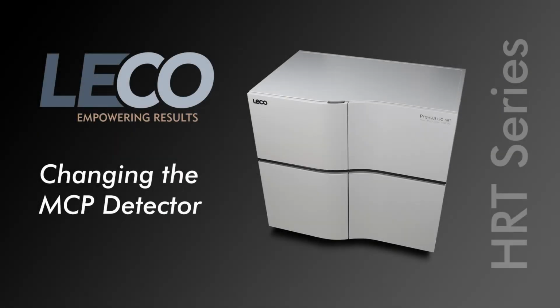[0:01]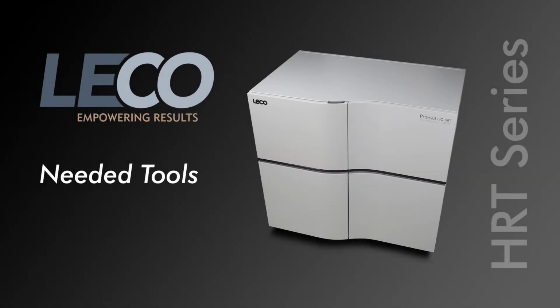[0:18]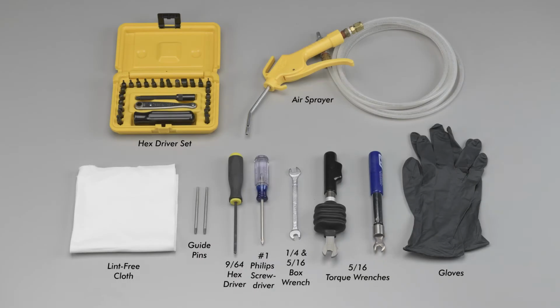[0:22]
Welcome to LECO Corporation's instructional video for changing the three-stage detector on the Pegasus HRT Plus system. This video will walk you through the proper method of venting the system and through the process of replacing the three-stage detector. Some or all of these tools may be needed to replace the detector.
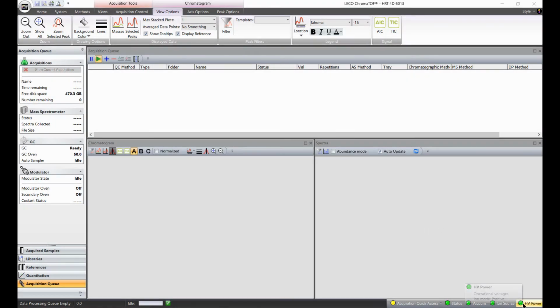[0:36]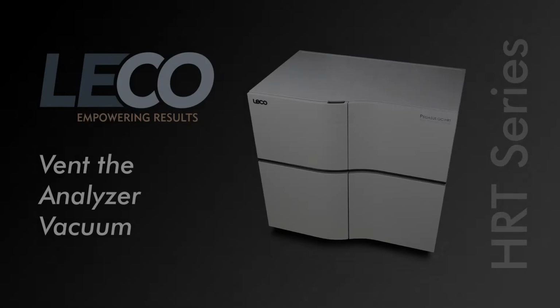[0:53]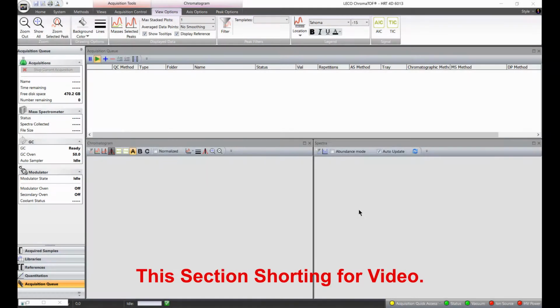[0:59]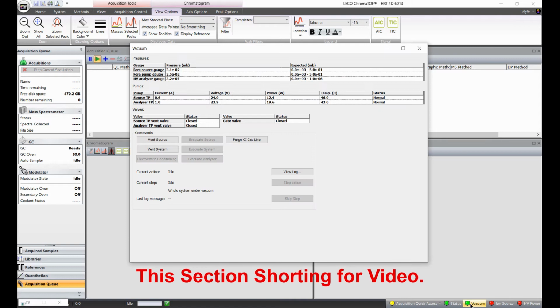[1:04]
Power down the high voltage by clicking on the HV power button in the lower right corner of the ChromaTOF software. Completely vent the analyzer through the vacuum page of diagnostics. This process will take a few minutes.
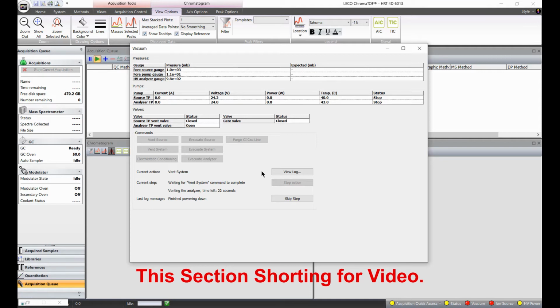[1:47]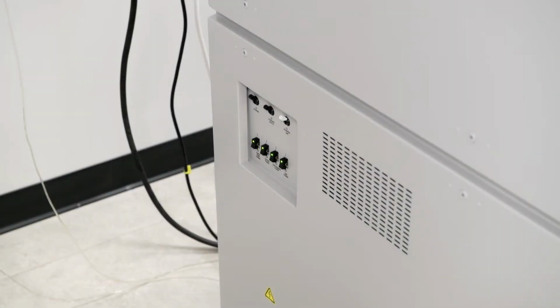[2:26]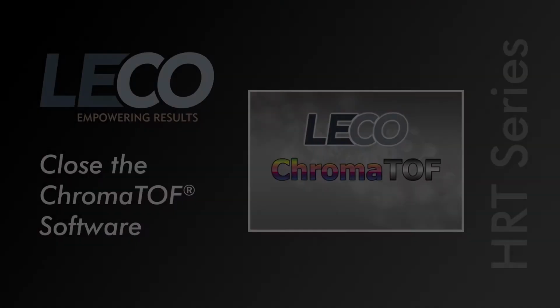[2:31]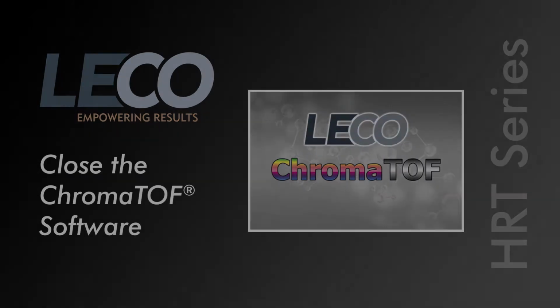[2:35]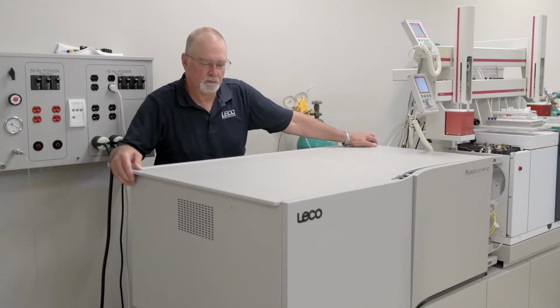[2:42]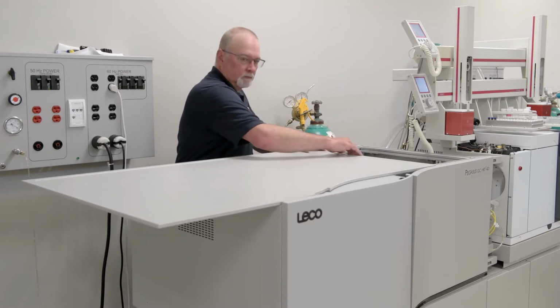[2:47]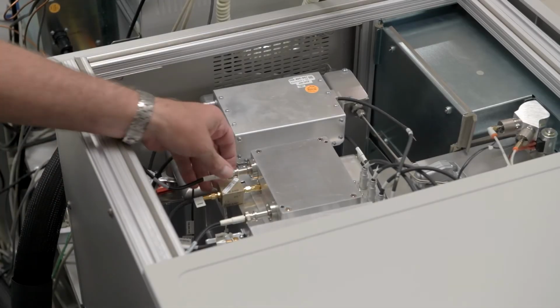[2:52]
Power off the electronics power by flipping the breaker switch on the side of the HRT. Close the ChromaTOF software. Slide the top lid back on the HRT to expose the top of the analyzer and the detector flange. Remove the detector bias, detector in, and the detector out cables from the back side of the detector flange.
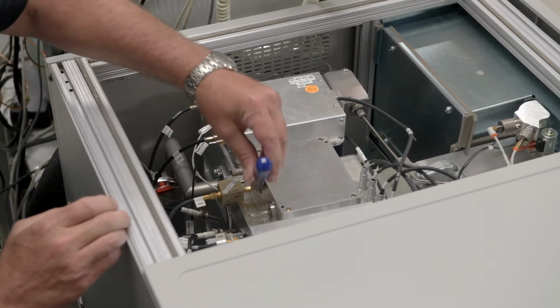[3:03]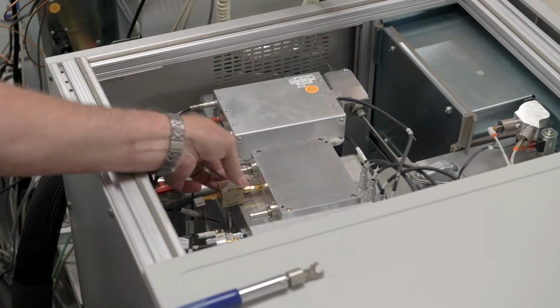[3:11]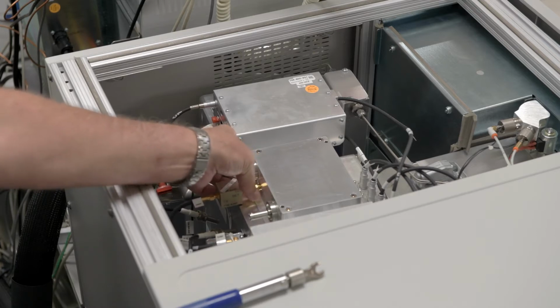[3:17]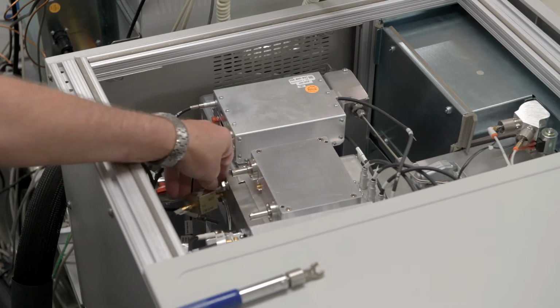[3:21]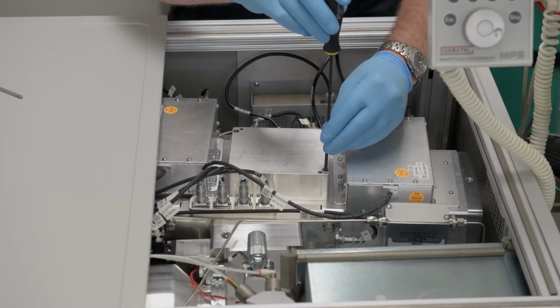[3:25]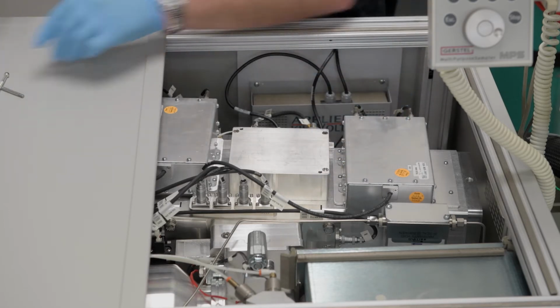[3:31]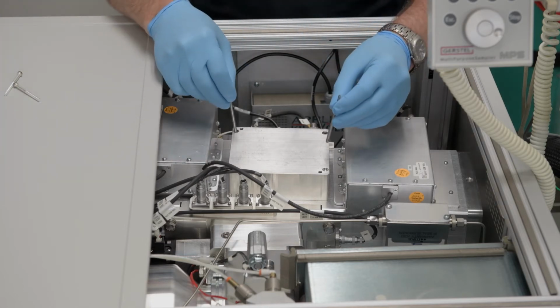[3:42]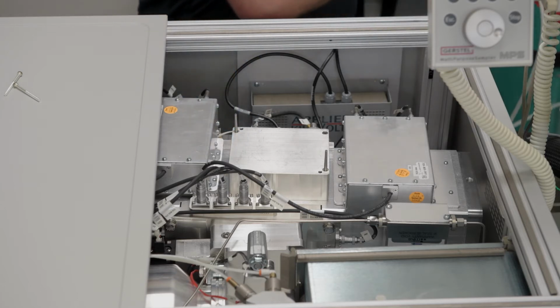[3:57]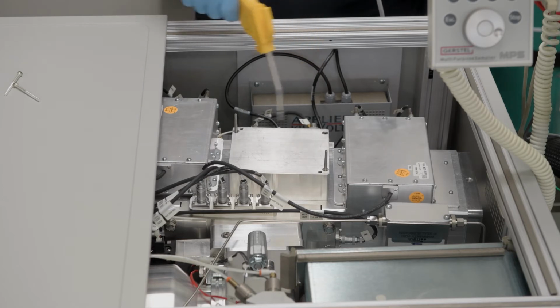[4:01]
Remove 2 of the 4 screws opposite each other from the detector flange and install guide pins to allow the flange to be lifted straight up and away from the analyzer. Use compressed air or canned air to blow away any dust from around the detector flange. This is to help prevent small particles from falling inside the analyzer when we lift the detector flange away from the analyzer.
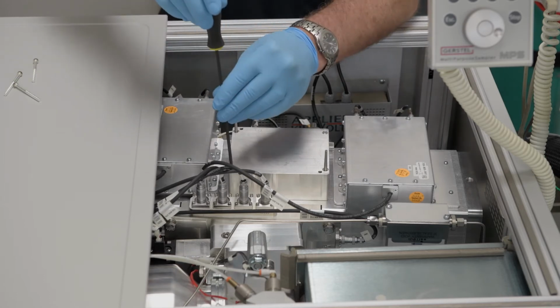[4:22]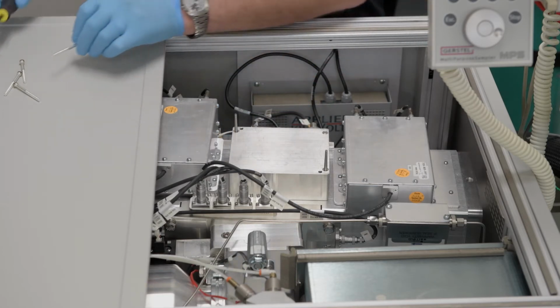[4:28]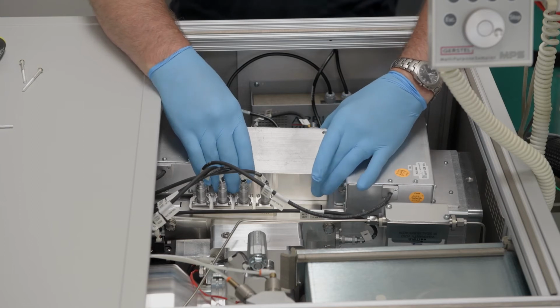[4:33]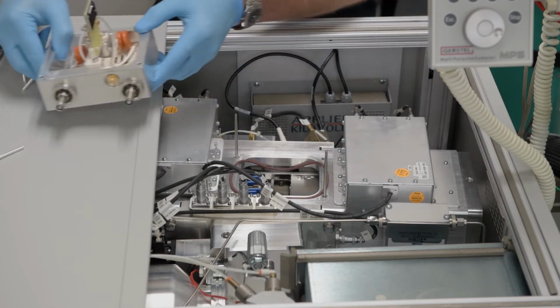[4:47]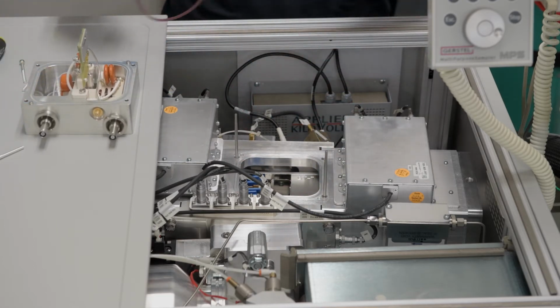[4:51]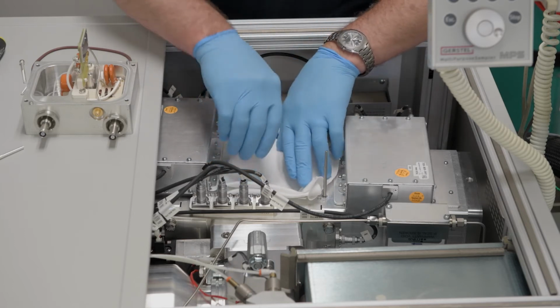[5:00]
Unscrew the 2 remaining hex screws and then remove the detector flange by lifting straight up using the guide pins and set the detector flange off to the side. Use a lint-free cloth to cover the opening to prevent dust or hair from settling inside the analyzer. You may also use a piece of folded paper or a blank flange to cover the opening.
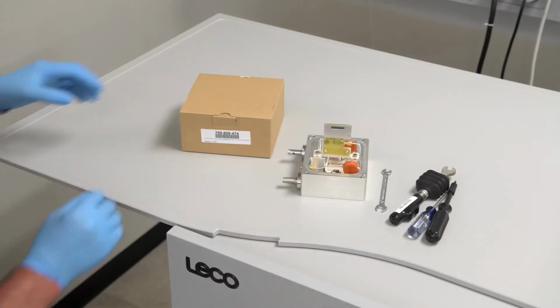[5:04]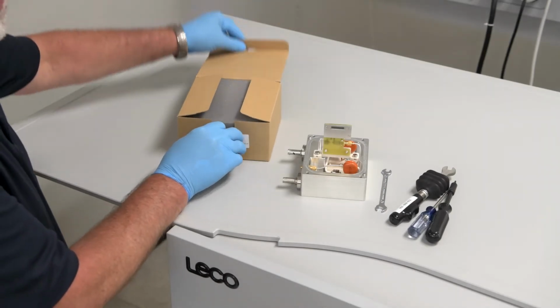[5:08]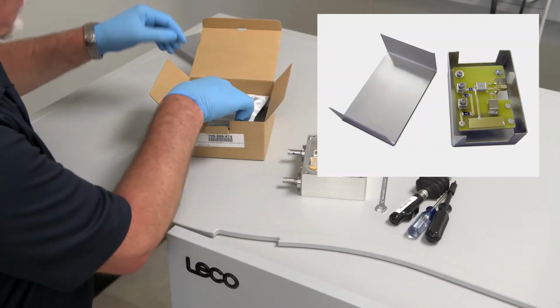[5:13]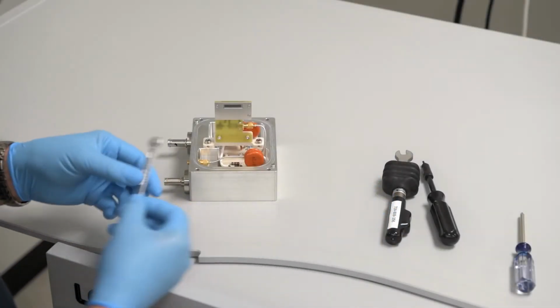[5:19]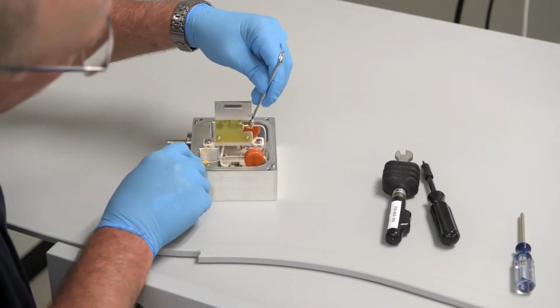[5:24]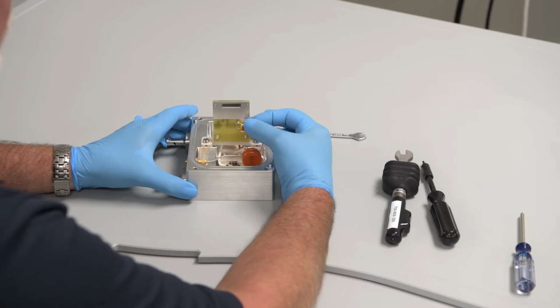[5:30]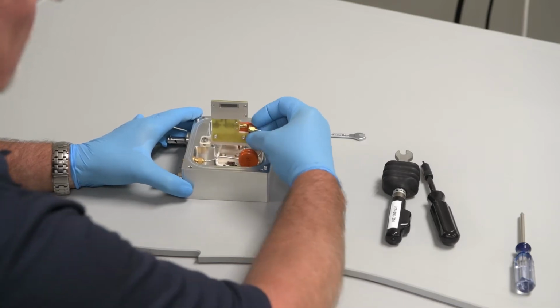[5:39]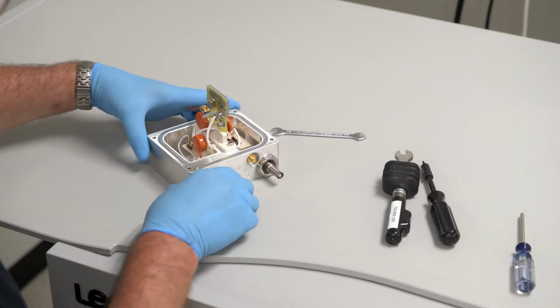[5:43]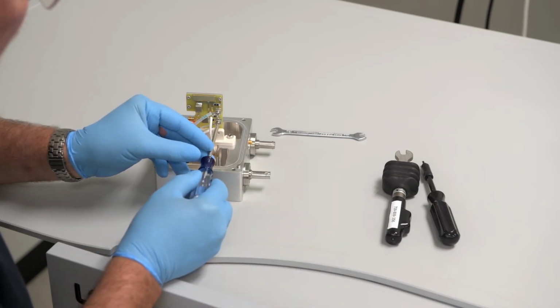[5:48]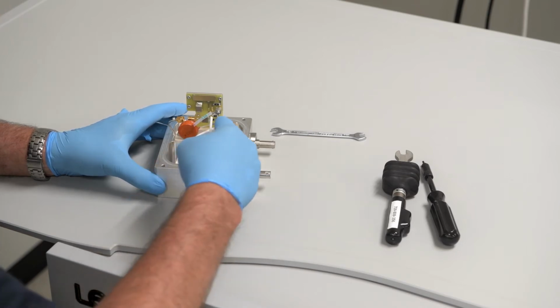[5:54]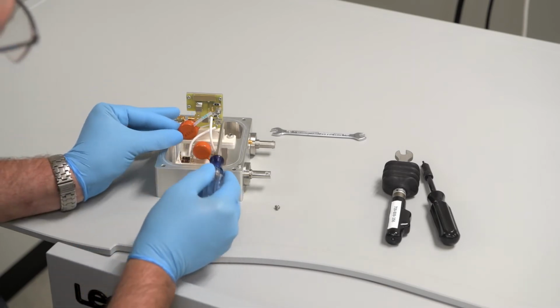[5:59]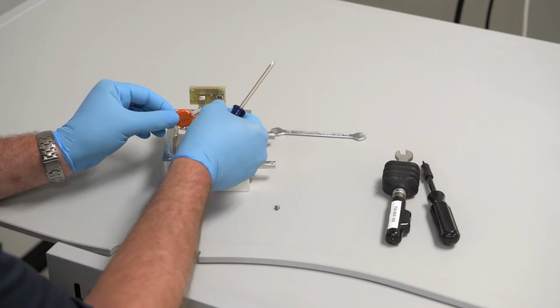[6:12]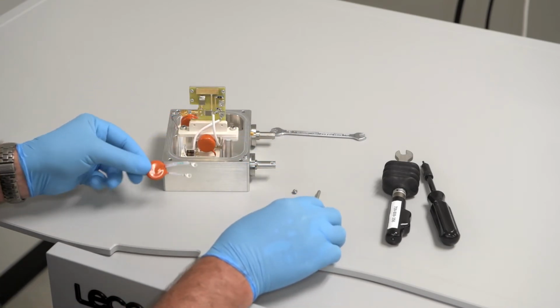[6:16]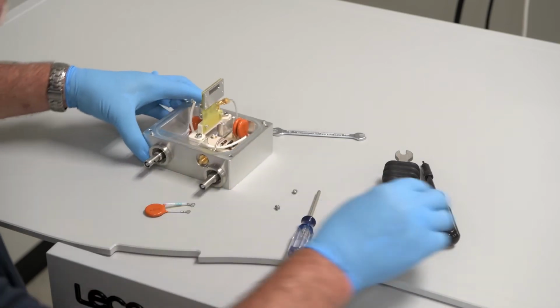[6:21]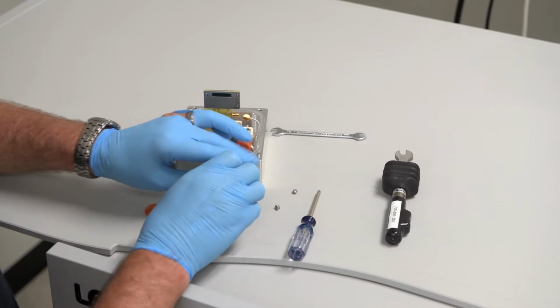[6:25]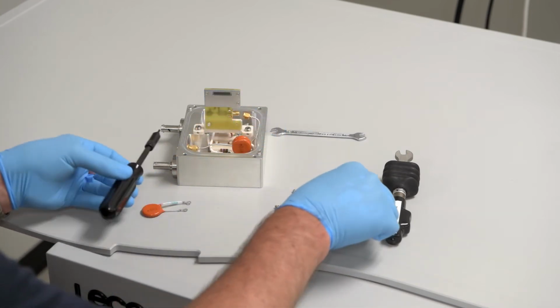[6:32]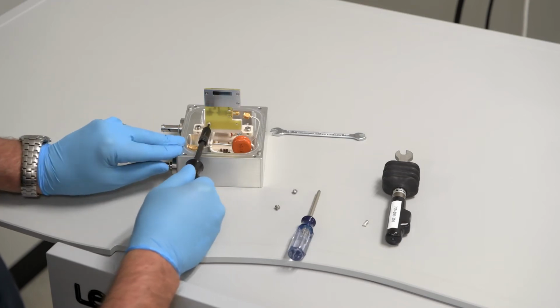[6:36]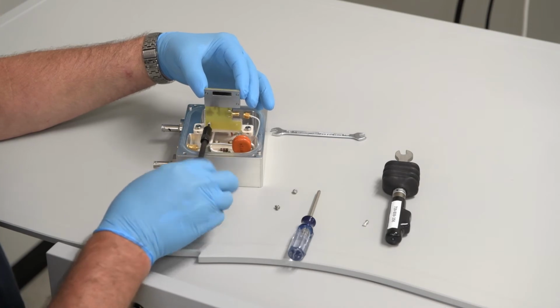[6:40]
Remove the new detector from its sealed packaging. Confirm that the serial number on the actual detector matches what's on the box. Wear protective gloves. Remove the old detector from the flange. Always hold the detector by the edges.
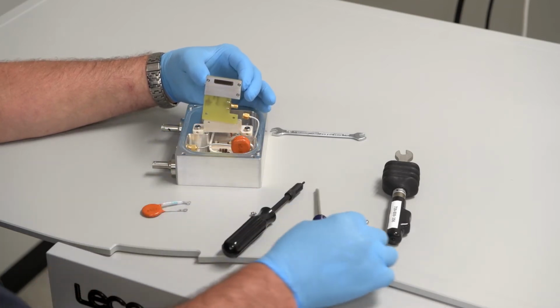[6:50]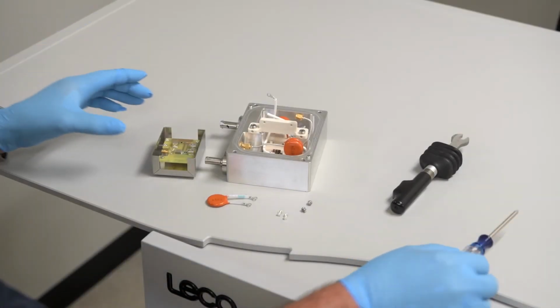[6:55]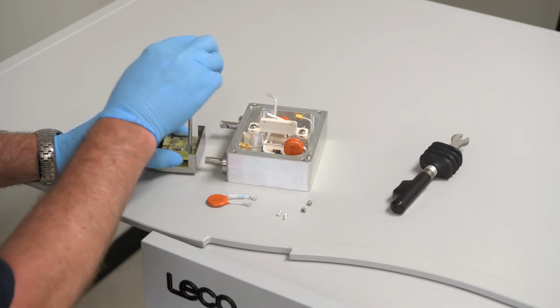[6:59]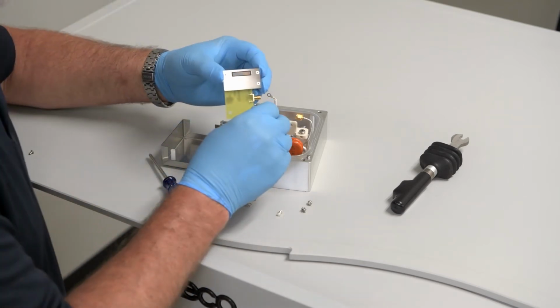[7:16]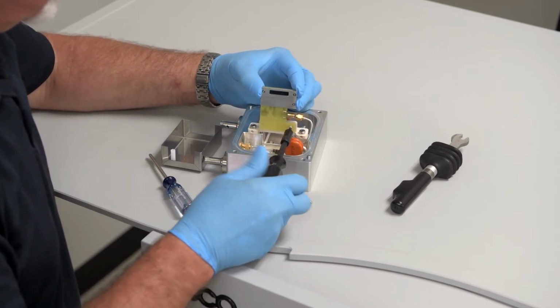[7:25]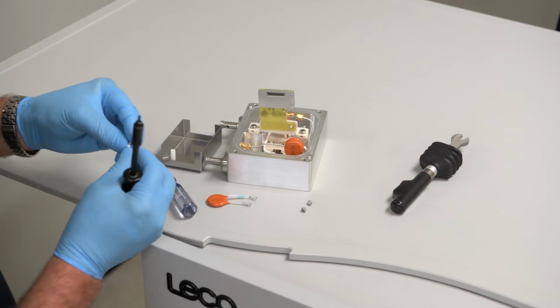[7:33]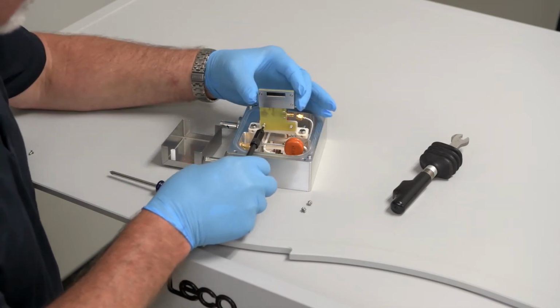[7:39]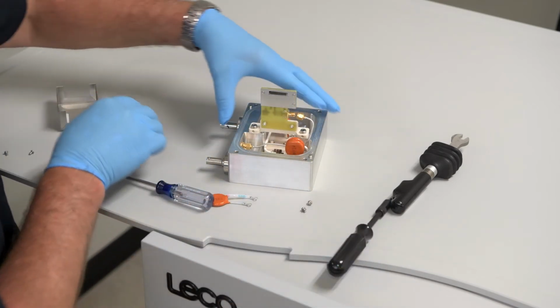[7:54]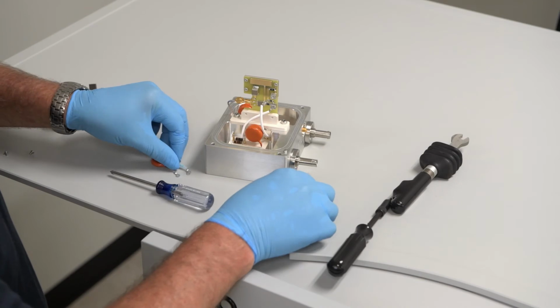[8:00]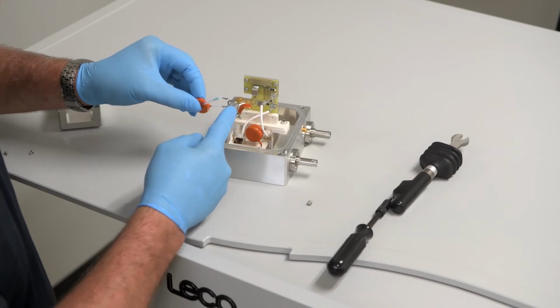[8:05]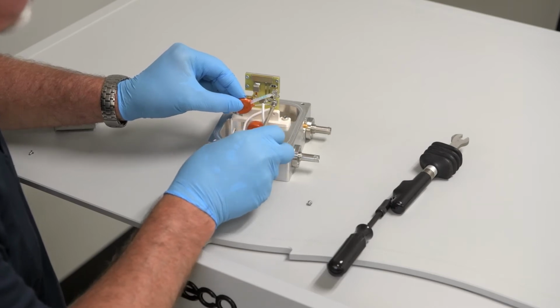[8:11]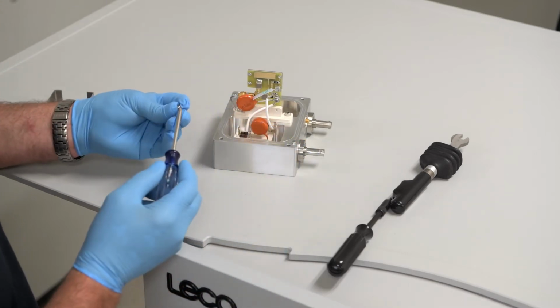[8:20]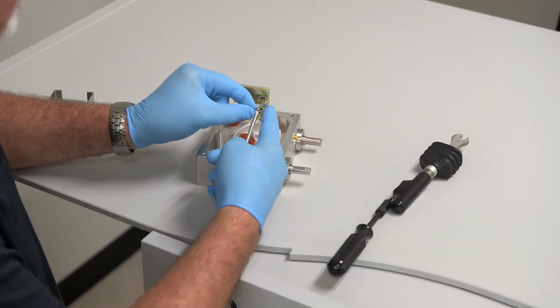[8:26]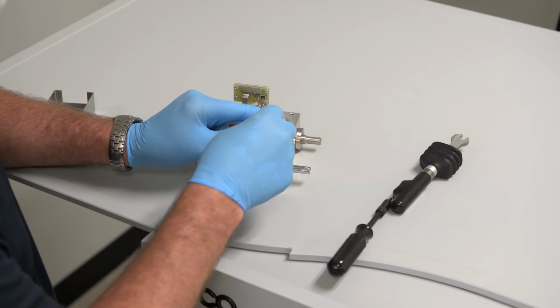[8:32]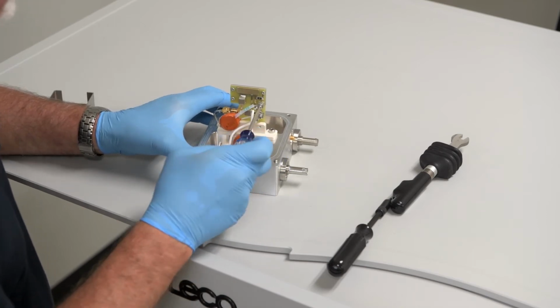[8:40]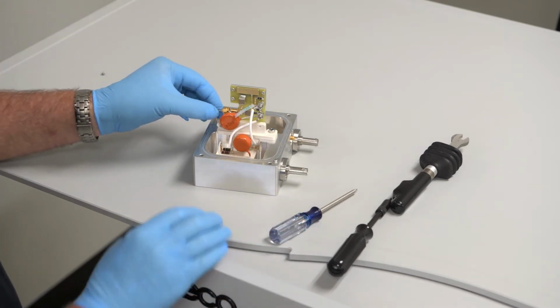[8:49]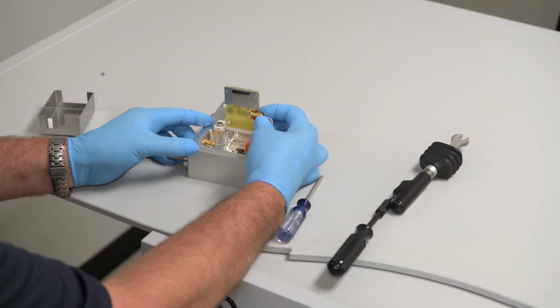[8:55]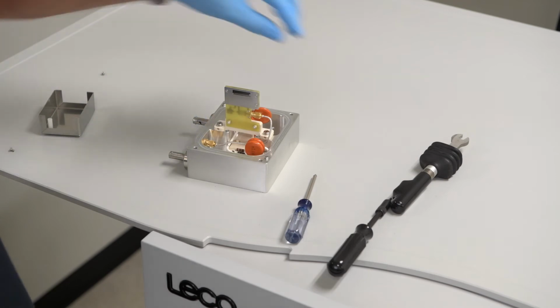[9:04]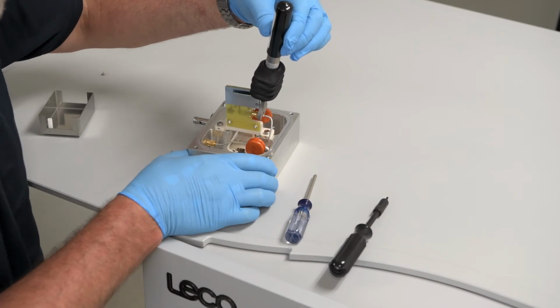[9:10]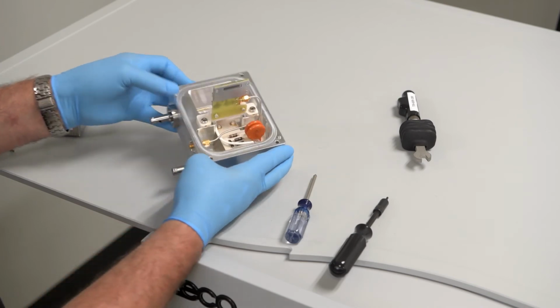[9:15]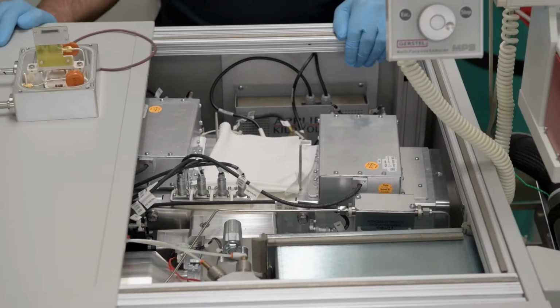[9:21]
Install the new detector. Be extremely careful not to touch the face of the detector. Use the 4 inch-pounds torque wrench to snug the 5/16 SMA connector. Inspect the detector. Make sure all of the connections are secure. Clean the detector flange O-ring. Make sure it's seated in the flange groove.
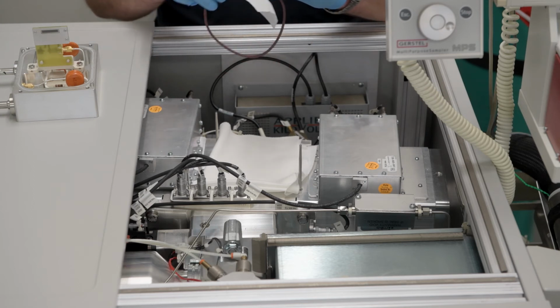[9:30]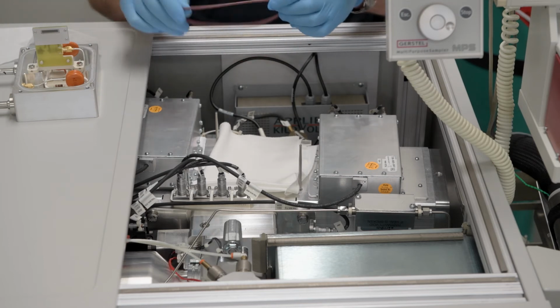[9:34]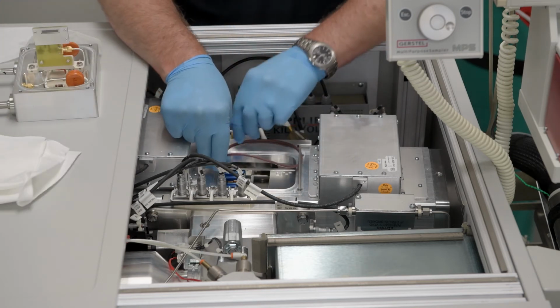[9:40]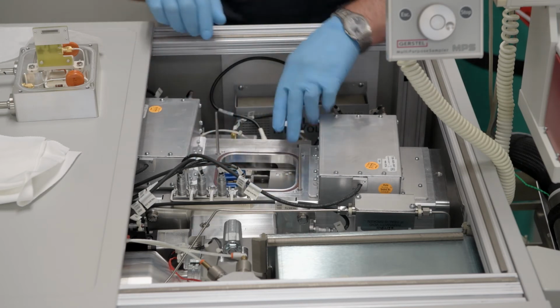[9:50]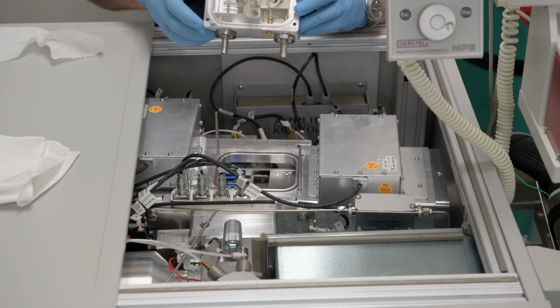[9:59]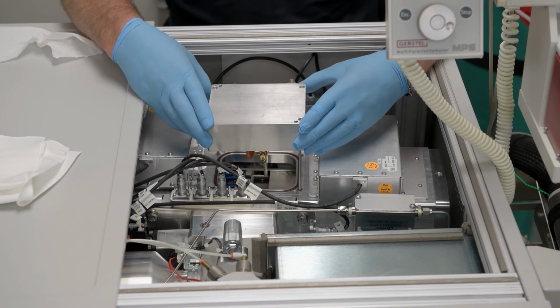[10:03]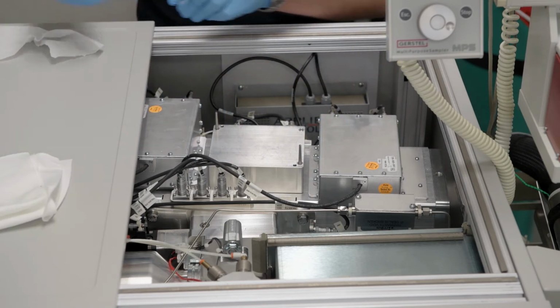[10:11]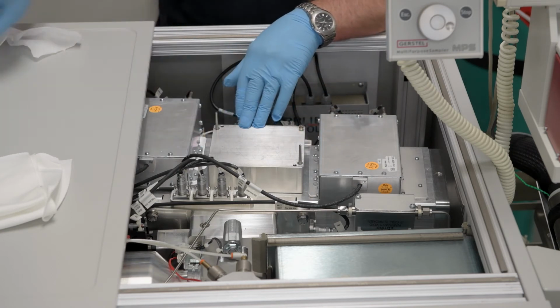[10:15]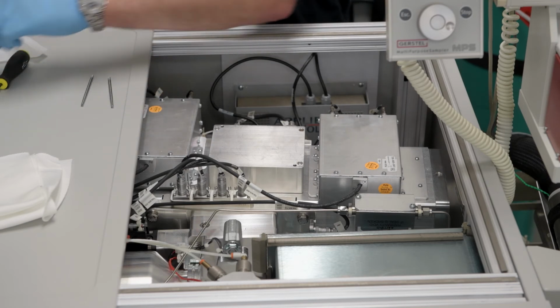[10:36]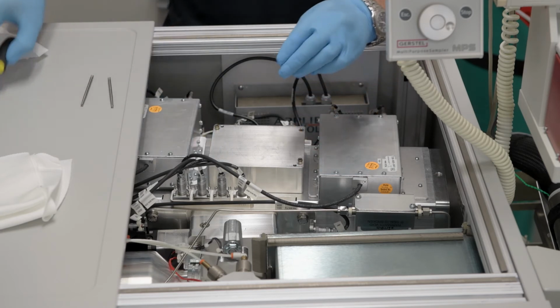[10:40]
Carefully install the detector and flange back into the analyzer with the use of the guide pins. Install 2 hex screws to hold the flange in place. Remove the guide pins and install the other 2 hex screws. Tighten all of the hex screws in an opposite manner to ensure it's compressing the O-ring flat.
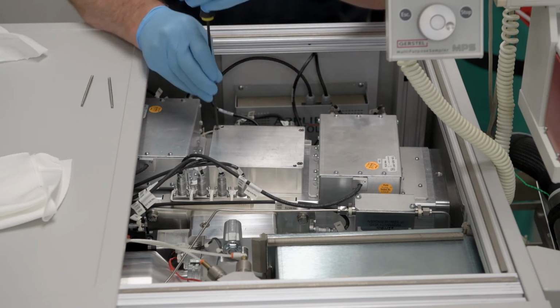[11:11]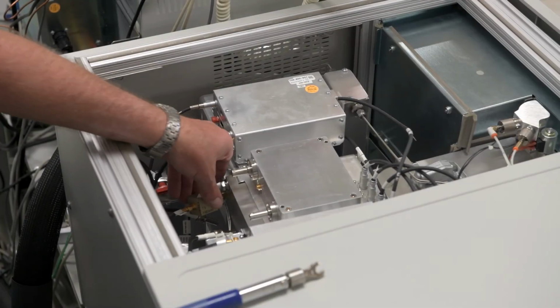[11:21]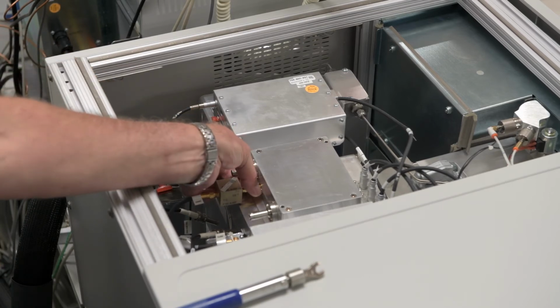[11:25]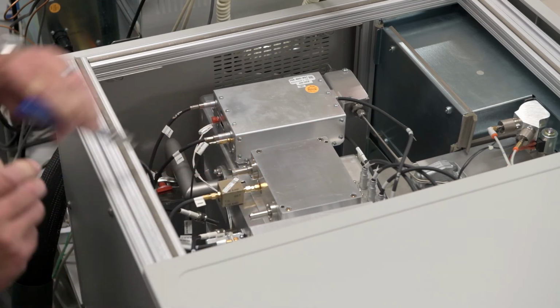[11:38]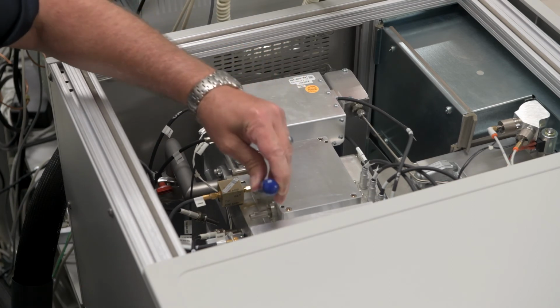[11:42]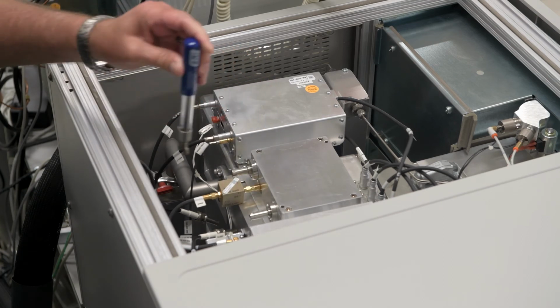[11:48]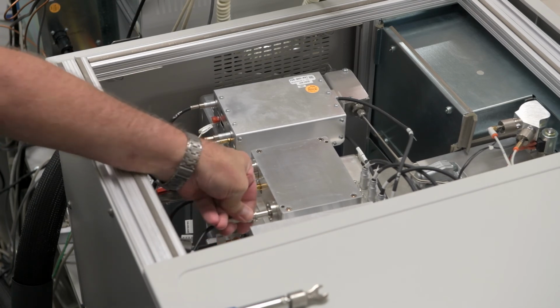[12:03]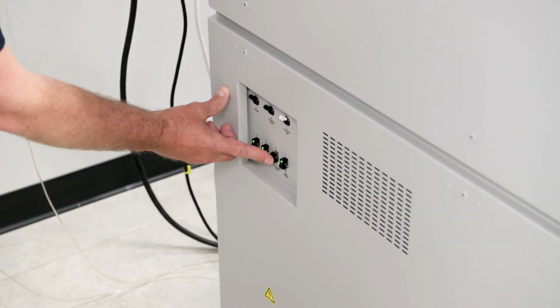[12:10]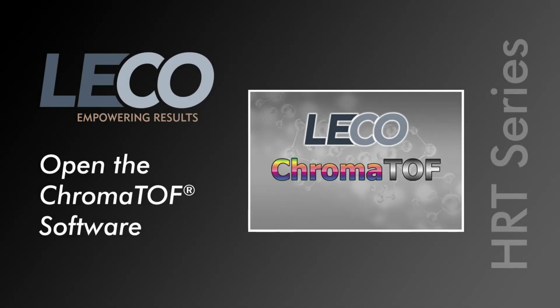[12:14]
Attach the detector out cable and secure it using the 8 inch-pounds torque wrench. Attach the detector in and the detector bias cables. Turn the electronics power switch back to the on position. Open the ChromaTOF software. The software will need to re-establish communication to all components.
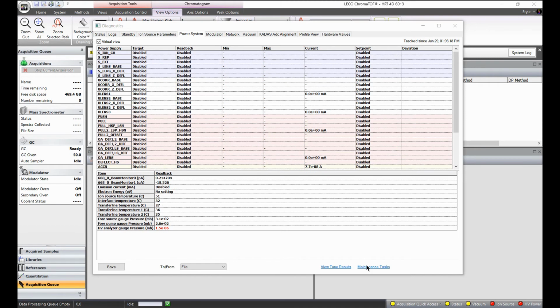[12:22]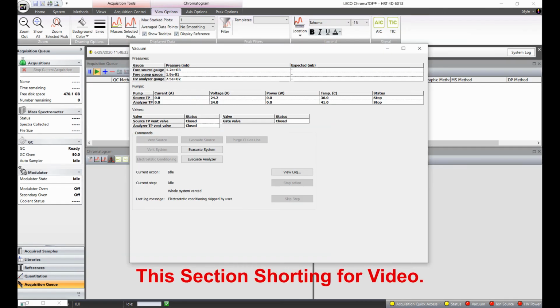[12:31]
Enter the service level of diagnostics and go to the power supply page. Click the Maintenance Tasks link and reset the detector. This will reset the stored detector voltage back to its minimum value. Evacuate the analyzer through the vacuum page of diagnostics.
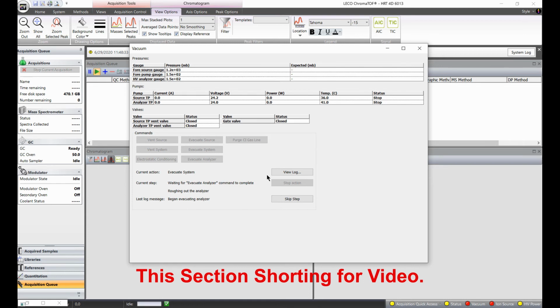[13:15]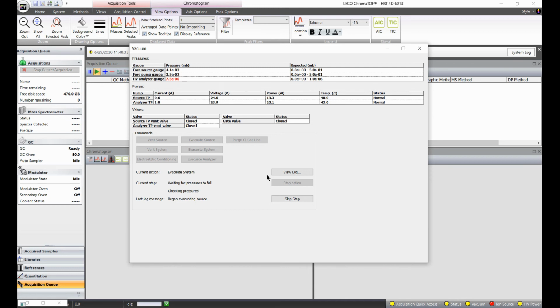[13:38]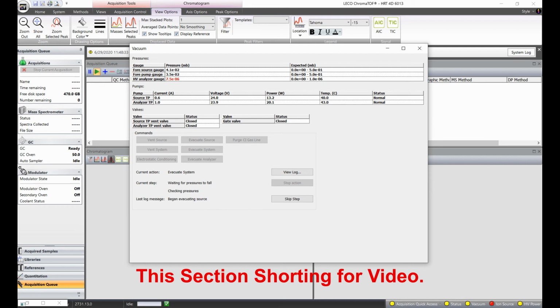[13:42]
Occasionally, while waiting for the roughing pump to evacuate the analyzer chamber, the software may time out and the process will have to be started again. It'll take at least a day for the vacuum to get down to the levels that are appropriate for powering up the high voltages, and every detector should be under vacuum for 24 hours before powering on.
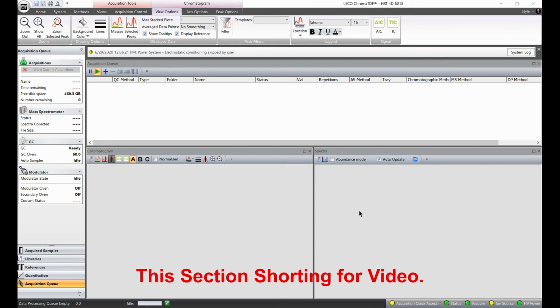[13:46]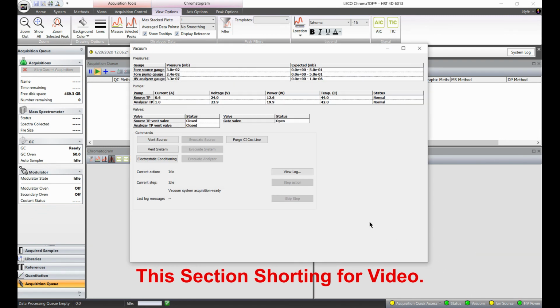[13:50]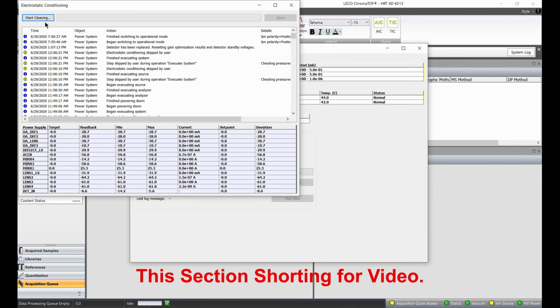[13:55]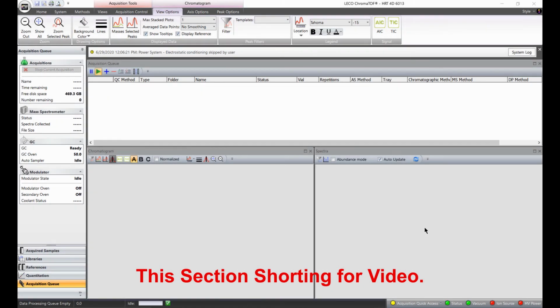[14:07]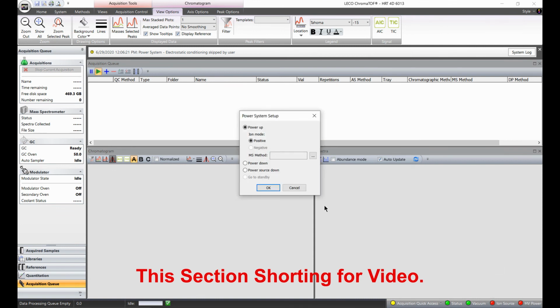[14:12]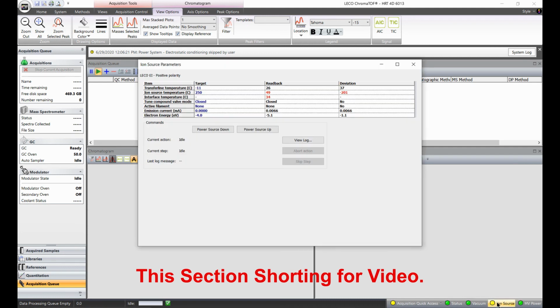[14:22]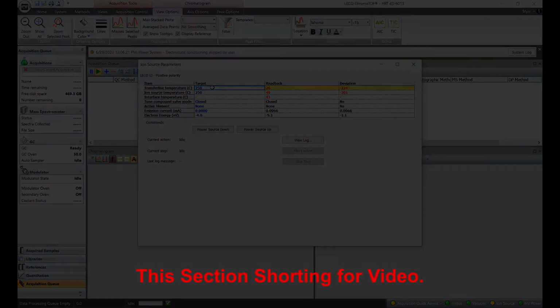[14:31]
After the vacuum gets below 5.0 times 10 to the negative 7 millibar, do an electrostatic cleaning. Power up the high voltage. Make sure the transfer line and source heaters are turned on. Make sure that the detector bias is set back to its minimum value of 1700 volts.
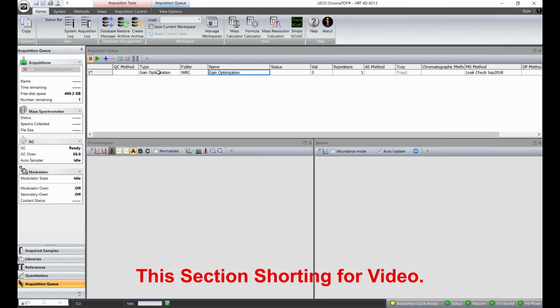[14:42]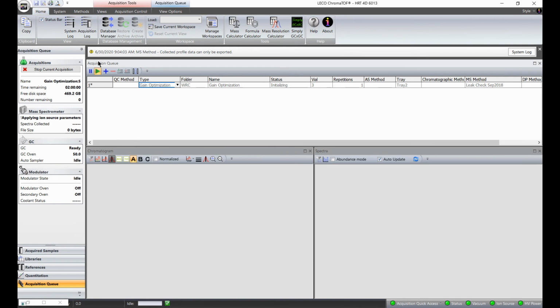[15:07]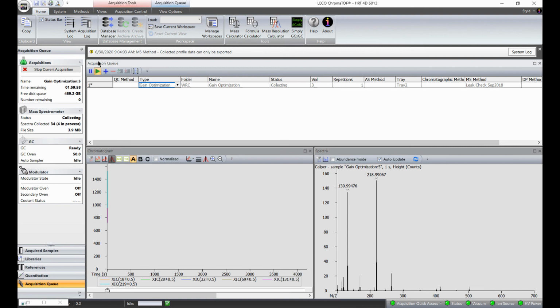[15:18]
Perform a gain optimization. The gain optimization will set the detector bias to a value that meets the minimum response. After the initial gain optimization, the instrument should go through a complete optimization.
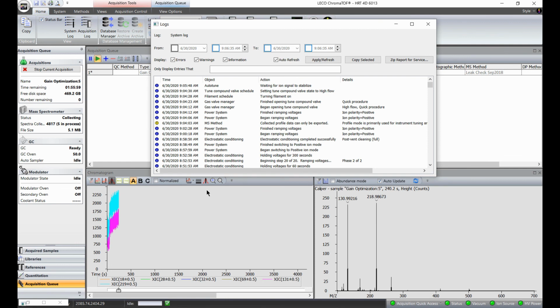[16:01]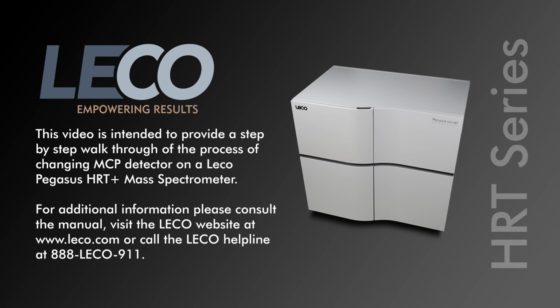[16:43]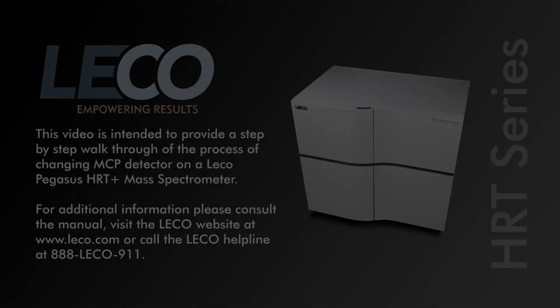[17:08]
This video is intended to provide a step-by-step walkthrough of the process of replacing the detector on a LECO Pegasus HRT Plus mass spectrometer. For additional information, please consult the manual, visit the LECO website at www.leco.com or call the LECO helpline at 888-LECO-911.